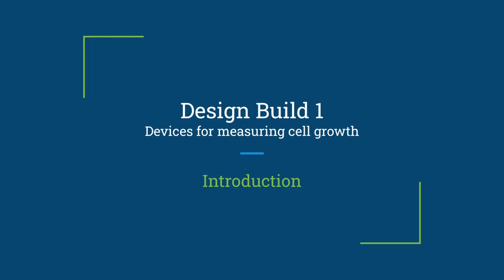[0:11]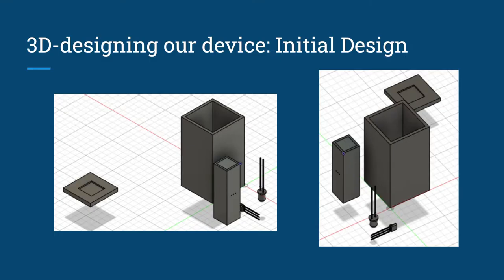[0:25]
Throughout this video, we'll present our 3D design for the cell measuring device, the programming aspects, building the prototype, using it in our experiment, and lastly, the data we have gathered. First of all, I will guide you throughout all the designs we made until we accomplish our final design and explain the logic behind it.
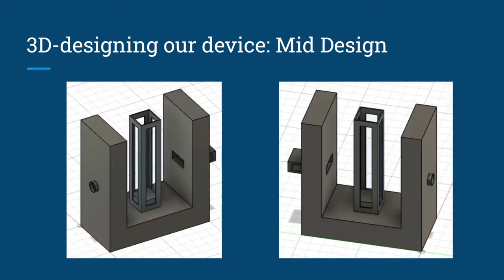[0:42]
So this is our first design, and it consisted of holes in the cuvette holder to make it semi-stable for the LED and the sensor to work. As time passed, we realized this was not the most effective design, therefore we moved to our second design. On our second design, we put a little more thought into it and made it more practical than the first one, because we found a way to secure the cuvette for higher stabilization, and both the LED and the diode sensor, so that our results would be more correct.
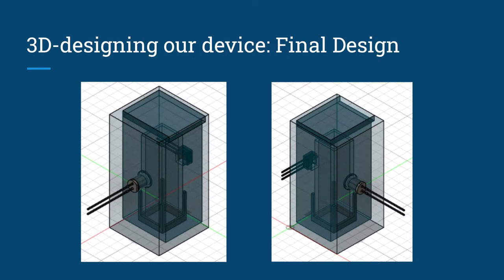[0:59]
For our last and final design, we refined our second design so we would be able to diminish the errors even more and also to increase the stability of the cuvette and therefore the sample. For our lid, we made a sliding lid so it would be easier to put on and to take out. The components are fitted sideways to ensure that we do not pull any cables and jeopardize the experiments. We will now show you an animation of our design.
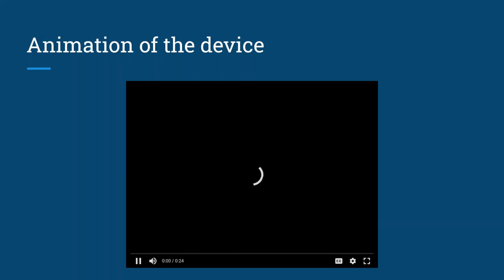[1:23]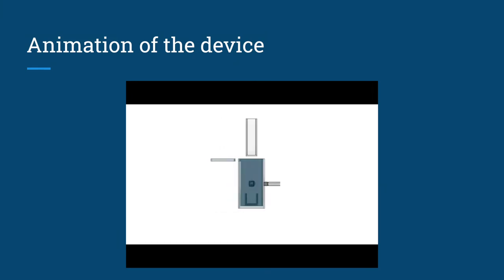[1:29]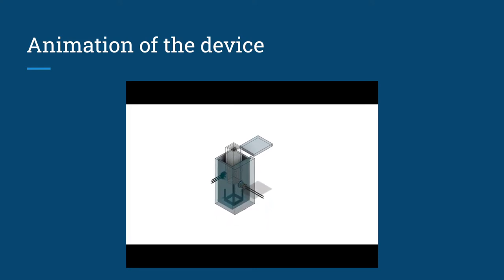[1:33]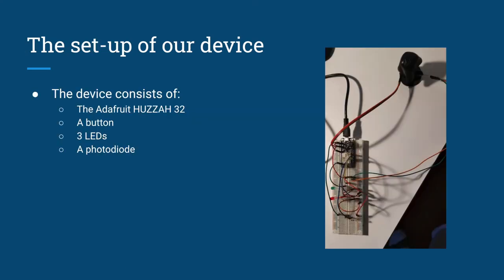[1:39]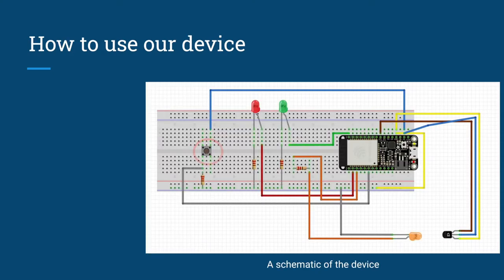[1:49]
Here is the setup of our device. The device consists of the Adafruit HUZZAH32, a button, 3 LEDs, and a photodiode. To start the device, simply hold down the button when the device connects to a power source.
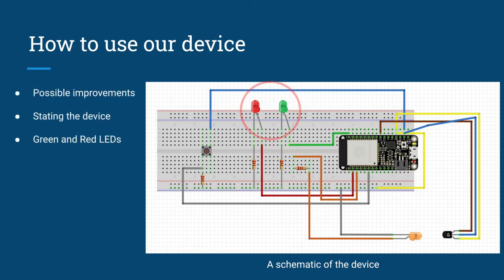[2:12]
In retrospect, it is clear that the wiring could be improved by arranging all the necessary GPIO ports on the same side of the board. Another way to improve the design would be having a switch instead of a button. This way we could start and stop recording data according to a switch rather than relying on a timer. The red and green LEDs are added for the sake of convenience. This way the user could know easily if the program is running or not.
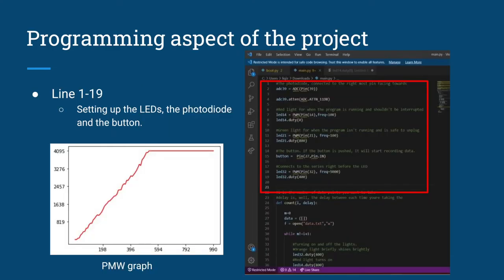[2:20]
This is a Python program used for measuring. From line 1 to line 19, it is simply to set up the LEDs, photodiode, and the button. The PWM duty is set according to this graph, and we've used a value that is around 2/3 of the maximum value at 400. A while loop is used for the measuring function, which depends on the number of measurements to be done and the delay between each measurement.
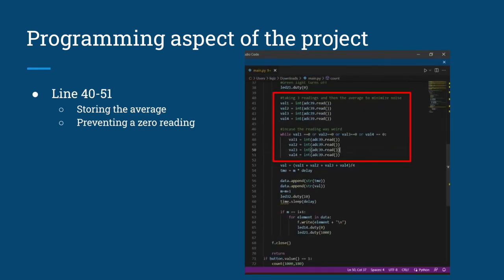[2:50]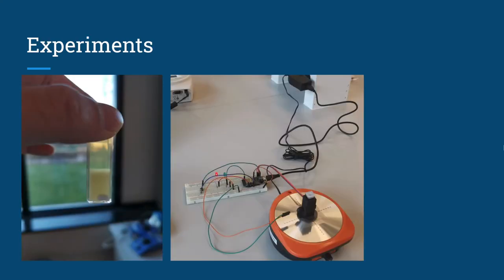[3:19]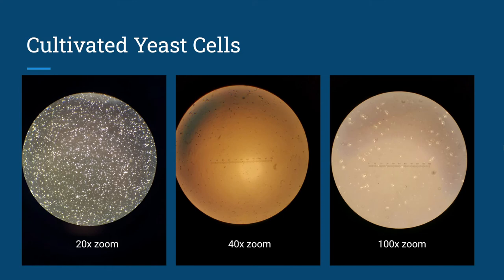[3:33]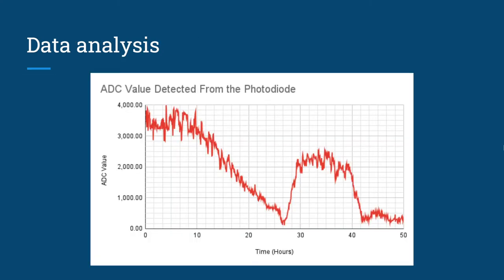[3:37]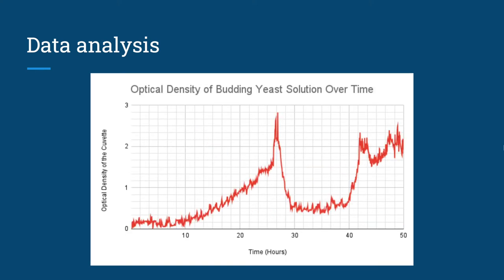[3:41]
As you can see, on the left is our budding yeast solution from over the weekend, as well as the setup of our device with the 3D printed holder on top of the magnetic stirrer. Next are some photos of our yeast cells under different magnifications. Here is the ADC chart of our 50-hour experiment. And this is the OD chart.
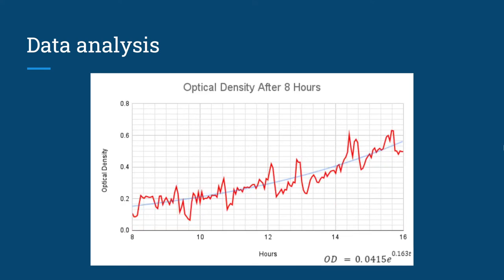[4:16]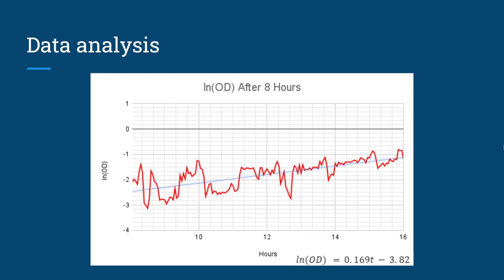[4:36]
For this data analysis, we will only be focusing on a time range between 8 and 16 hours, as that is the typical time range of exponential growth for the yeast cells. From here, we can determine that the doubling time is approximately 4.25 hours. With the semi-log method, we naturally observe a linear relationship between ln OD and time, with quite a lot of noise.
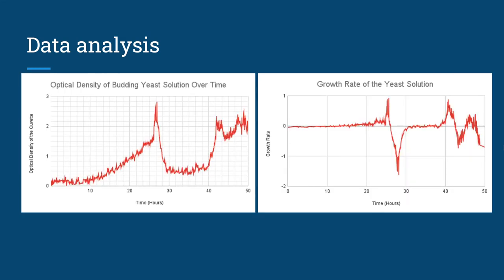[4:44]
Here is the growth rate calculated using instantaneous differentiation, where we calculate the difference in OD between each consecutive reading, divided by the delay. As you can see, this fits quite logically with our first OD chart, with sharp increase and decrease in growth rates at corresponding times. Sadly, this doesn't mean much since we will only be focusing on the aforementioned interval.